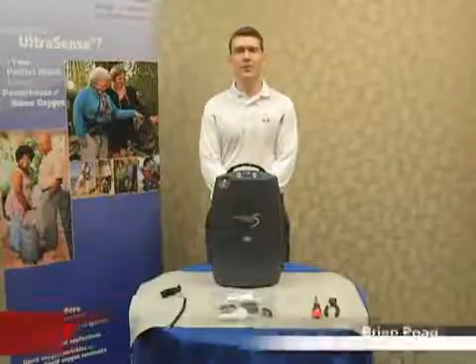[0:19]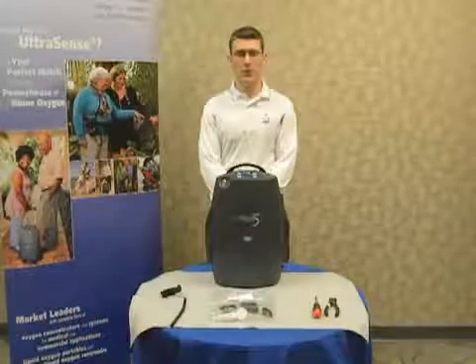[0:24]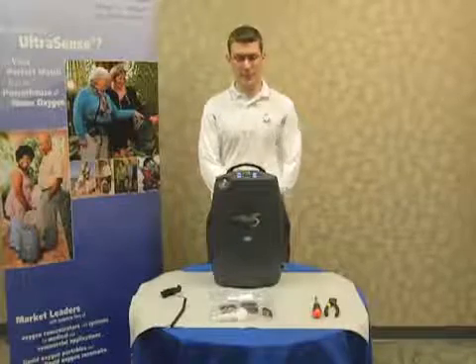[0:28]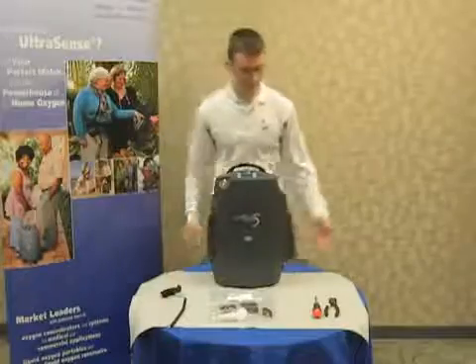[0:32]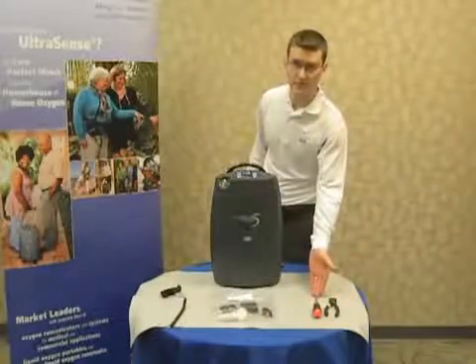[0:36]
We manufacture SeQual and AirSet products, and today we'll be covering the preventative maintenance on the Eclipse 5. Tools required are an ESD mat, wire cutting pliers, and a #1 Phillips head screwdriver.
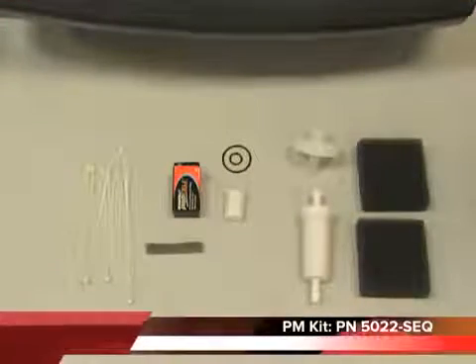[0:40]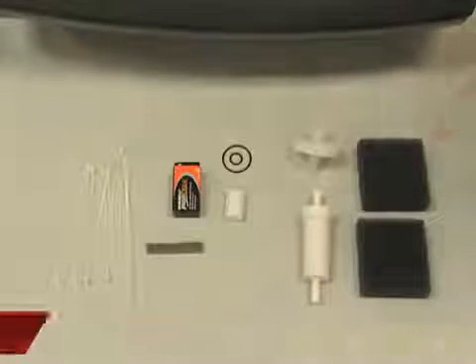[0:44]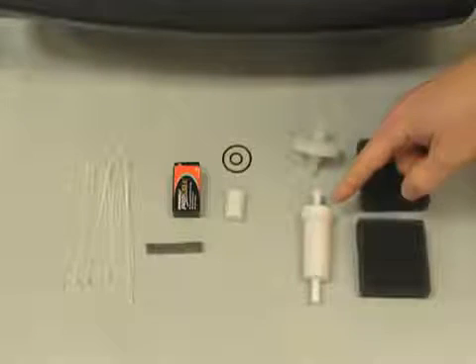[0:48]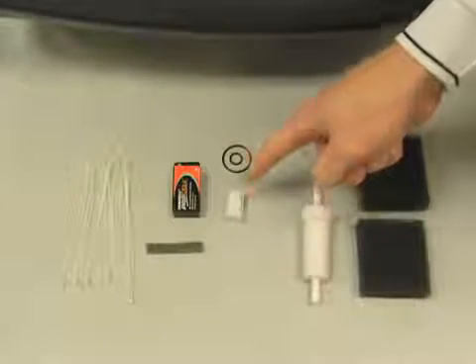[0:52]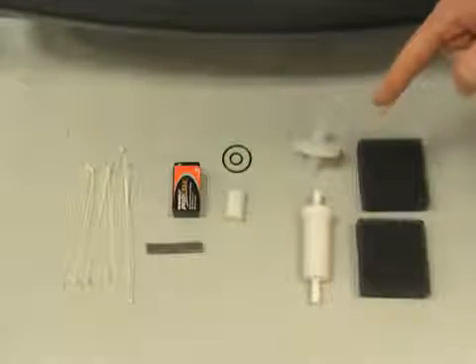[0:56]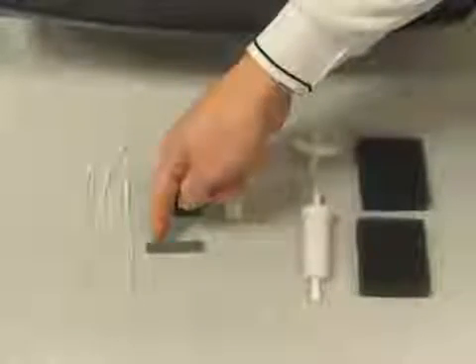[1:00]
The preventative maintenance kit, part number 5022-SeQ, includes your air intake filter, compressor air intake filter, old style HEPA filter, new style HEPA filter, 2 O-rings for the new style HEPA filter, 9-volt battery, 9-volt battery foam, and zip ties.
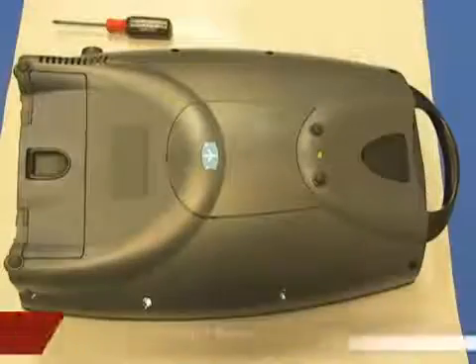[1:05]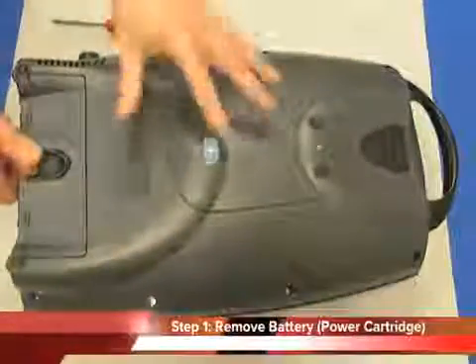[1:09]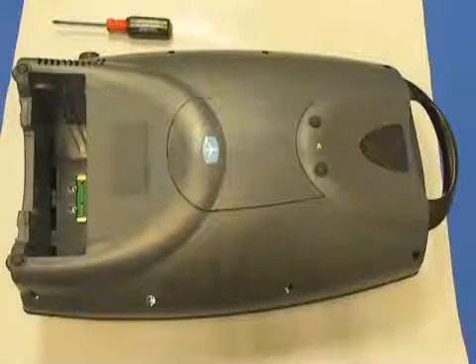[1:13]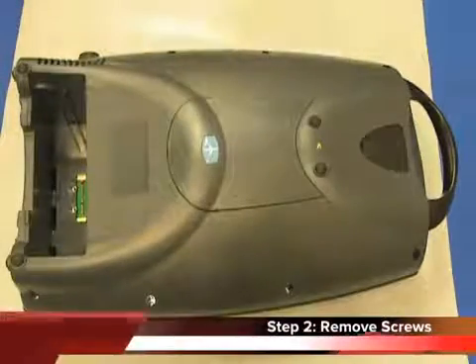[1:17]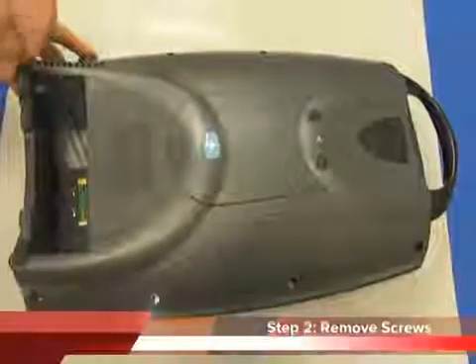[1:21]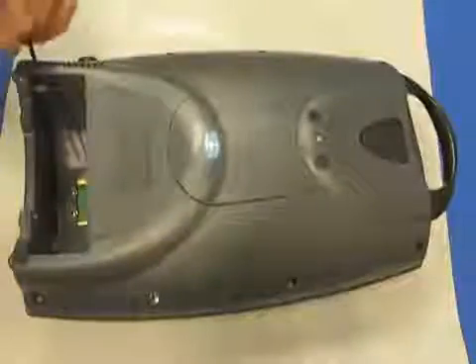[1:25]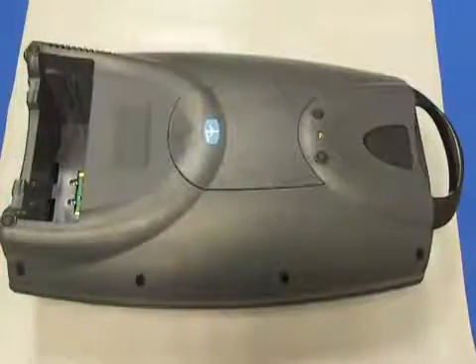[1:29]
To begin with, you'll want to remove the power cartridge from the Eclipse unit. Once the power cartridge is removed, you'll want to use your #1 Phillips head screwdriver and remove the 10 screws. Once the screws are removed, you'll want to remove the front panel.
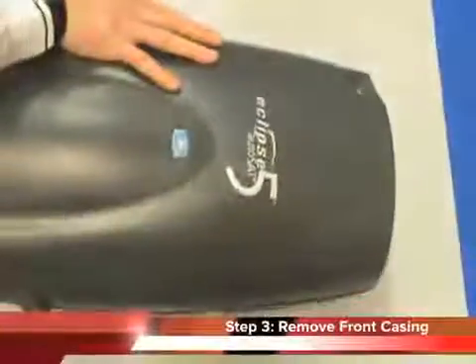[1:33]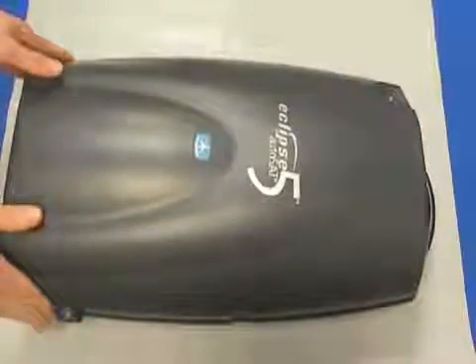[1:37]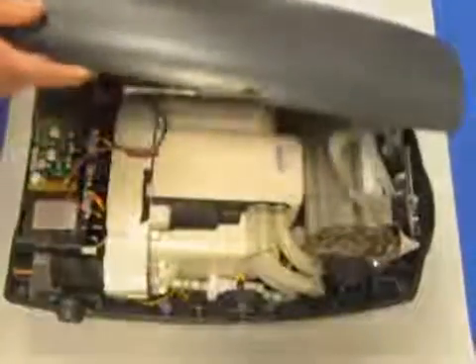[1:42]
Turn the unit over and place the unit horizontally on the back cover. When removing the front cover, pop the bottom end off first and rotate it towards the handle. Be careful not to tear the control panel ribbon cable that is attached to the front cover.
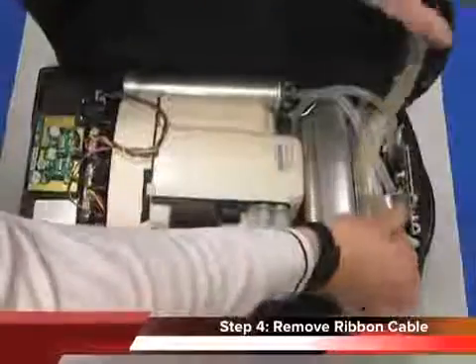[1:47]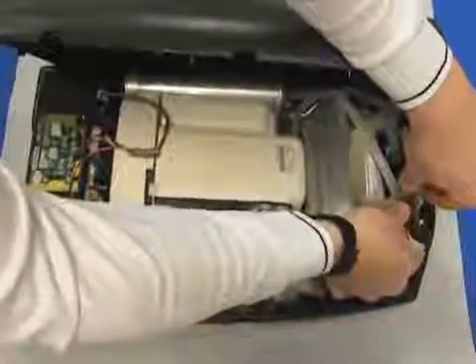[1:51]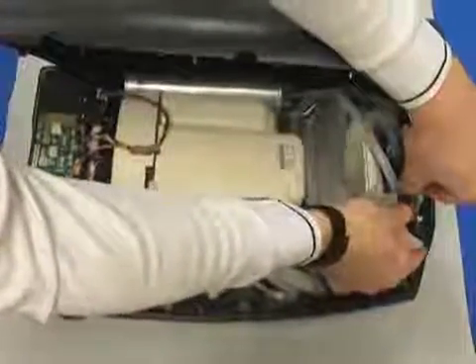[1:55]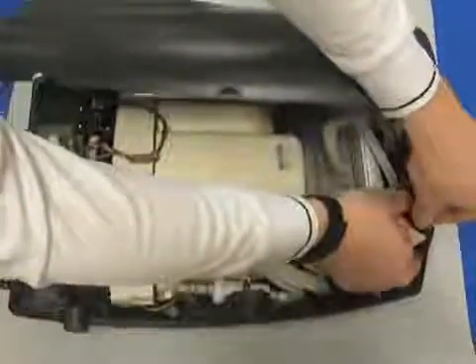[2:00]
You'll want to grasp the circuit board firmly between your forefingers and thumb. Grasp the head of the membrane panel overlay cable in your other hand. Firmly pull the cable away from the board. Pull the cable straight out.
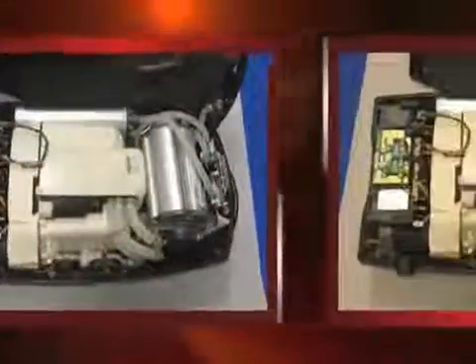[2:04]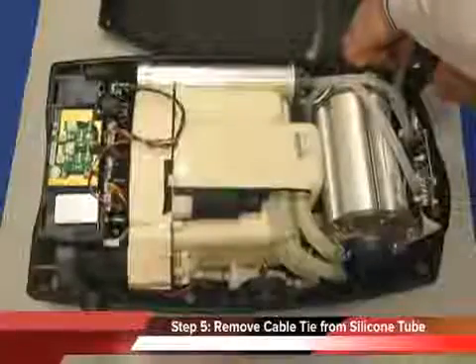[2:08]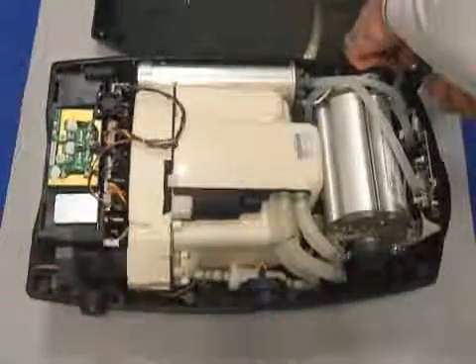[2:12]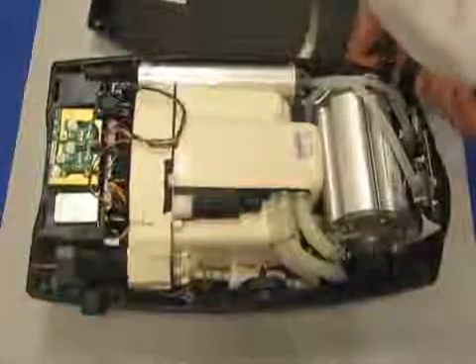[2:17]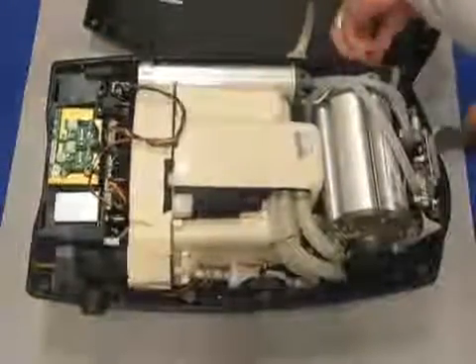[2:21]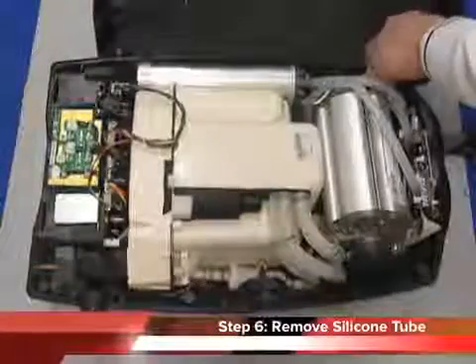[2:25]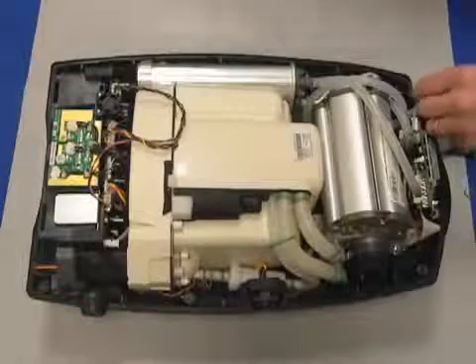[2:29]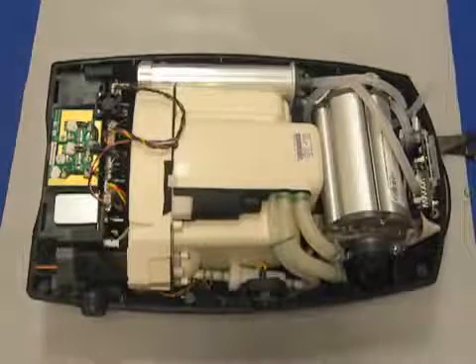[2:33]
The next step is to remove the cable tie connecting the silicone tube to the cannula fitting. First, cut the cable tie at the head of the cable tie with your wire cutting pliers to keep from damaging the tubing. Once you've removed the cable tie, you're ready to remove the silicone tube from the front case. You can do this by pulling directly on the silicone tube away from the front case to detach the silicone tube from the cannula fitting.
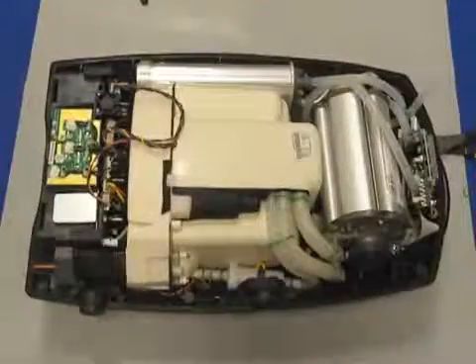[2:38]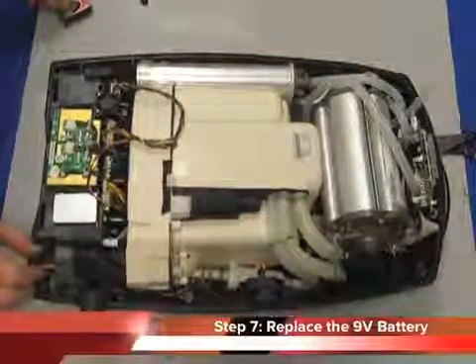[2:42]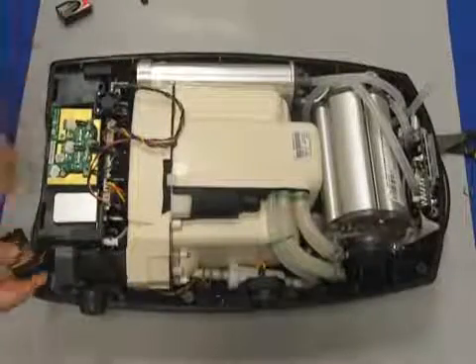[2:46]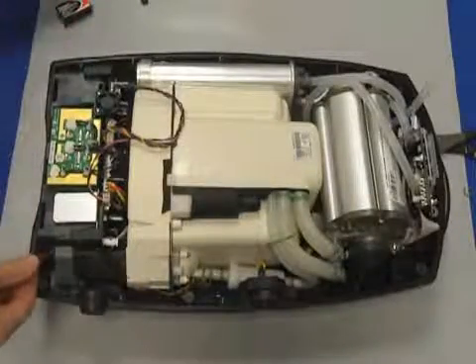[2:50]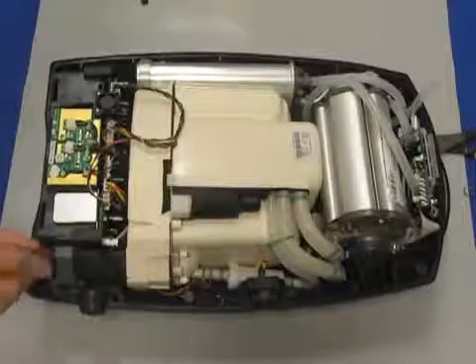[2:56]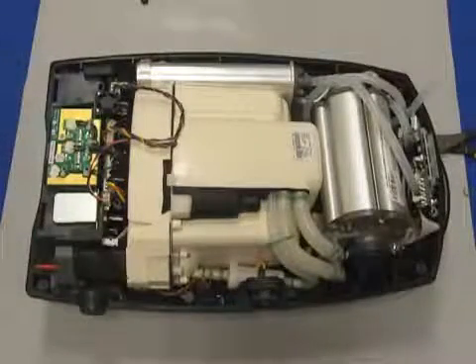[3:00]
The next step is to replace the 9-volt battery. You'll want to lift the battery out of the compartment located at the bottom right corner of the unit. Disconnect the 9-volt battery harness. With your new battery, reconnect the battery harness to the new 9-volt battery. Ensure that the terminals are aligned correctly. Then place the battery back into the compartment. Install new battery foam if necessary.
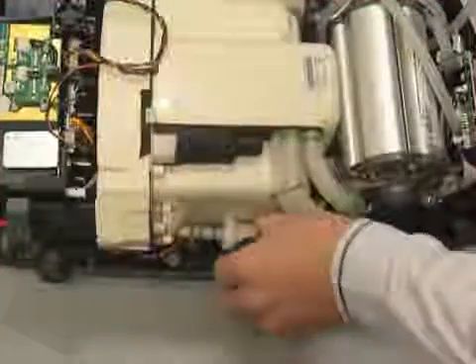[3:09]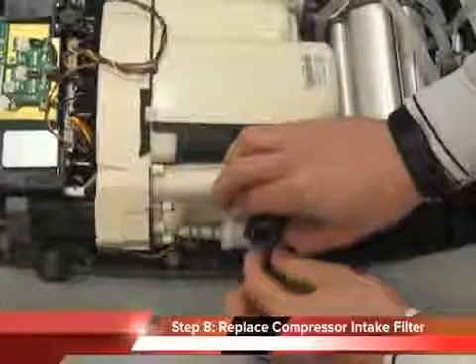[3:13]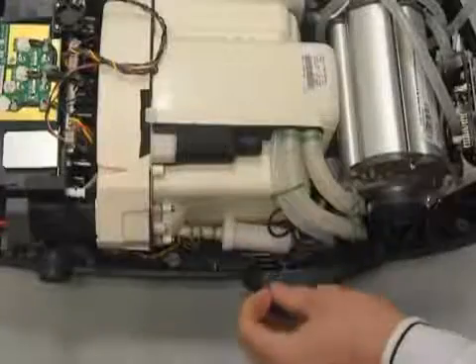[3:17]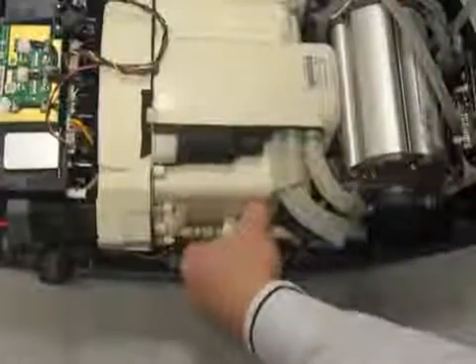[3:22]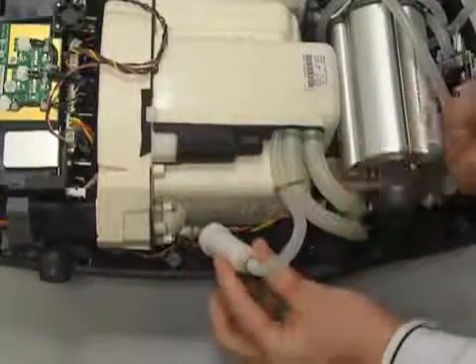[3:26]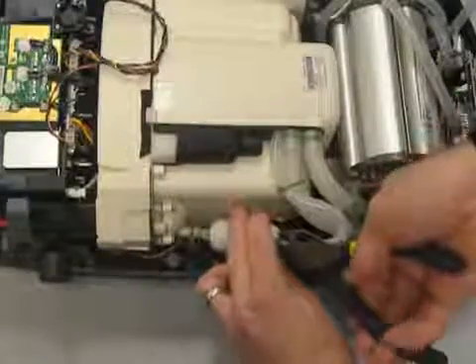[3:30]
The next step is to replace the compressor intake filter. You may want to move the power connector out of the way for ease of access to the compressor intake filter. You'll want to pull the compressor intake filter out from the unit and cut the heads of the cable ties located at the top and bottom of the filter as shown here.
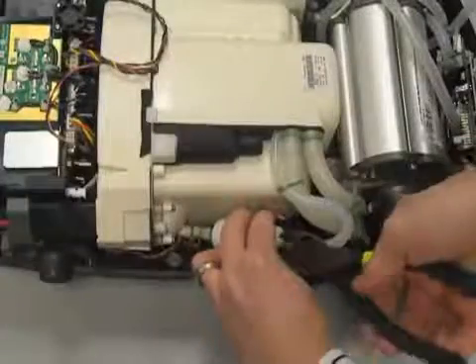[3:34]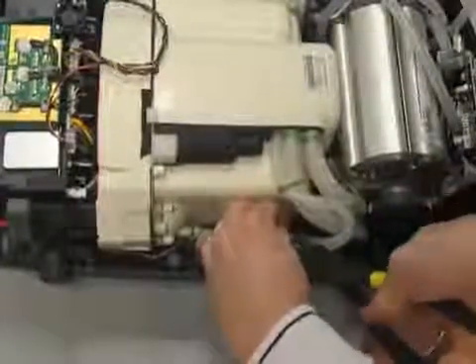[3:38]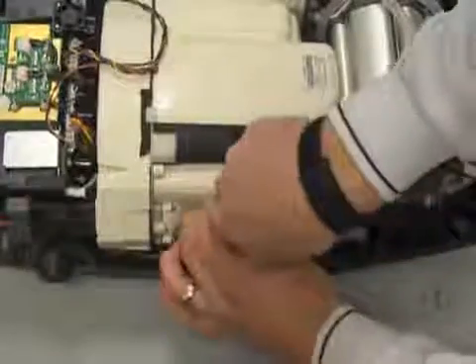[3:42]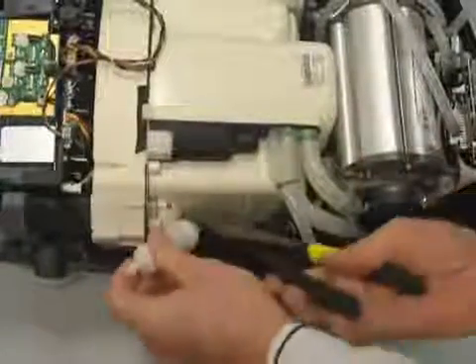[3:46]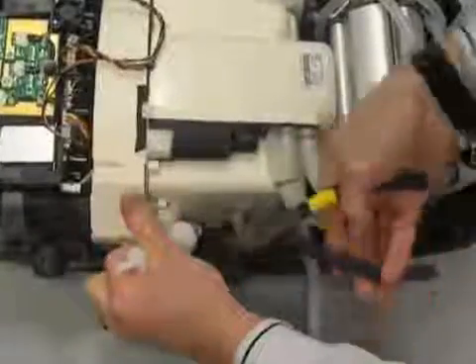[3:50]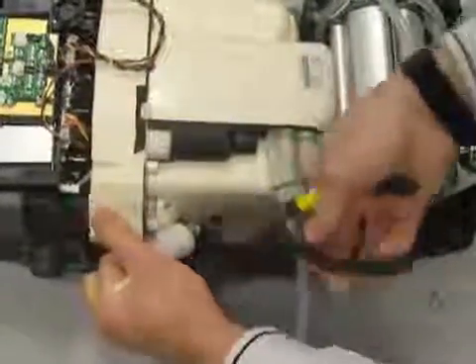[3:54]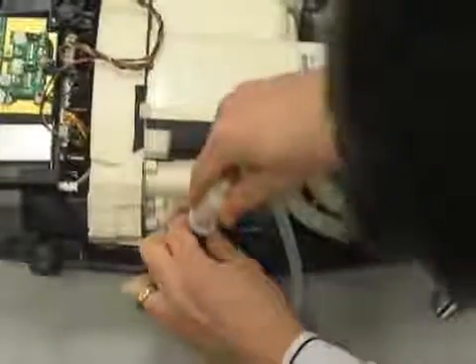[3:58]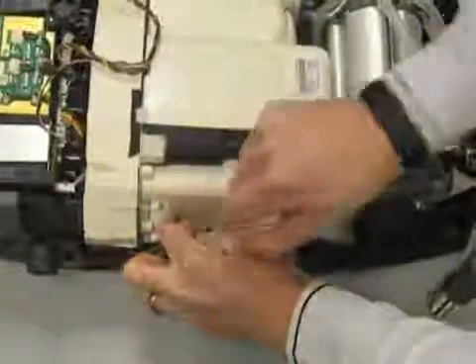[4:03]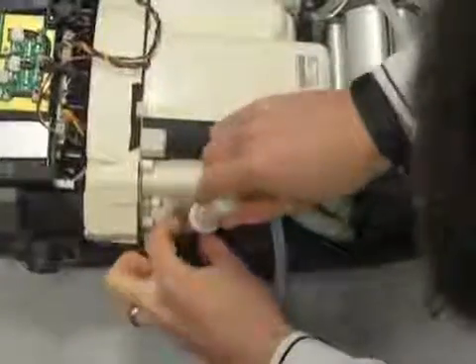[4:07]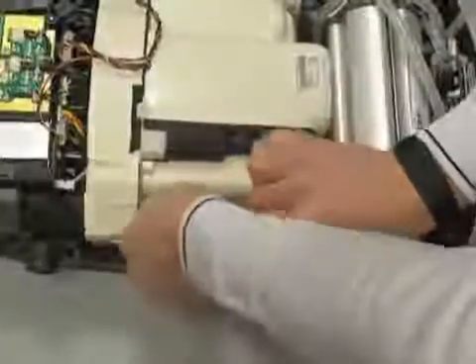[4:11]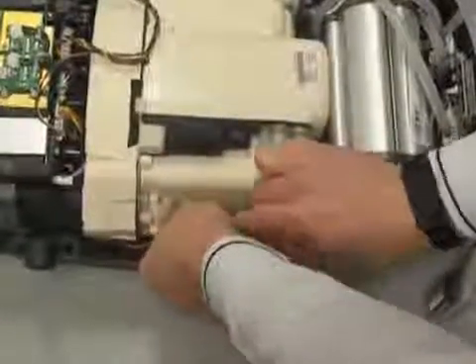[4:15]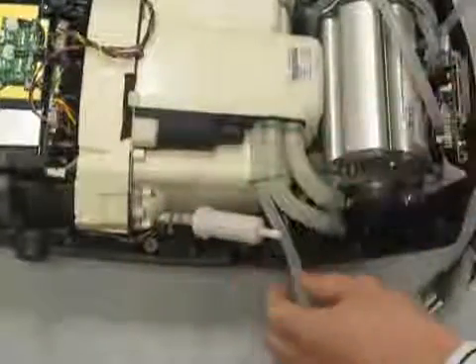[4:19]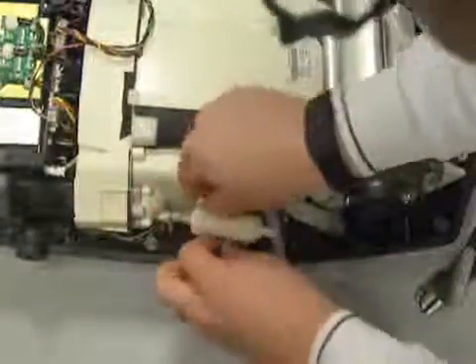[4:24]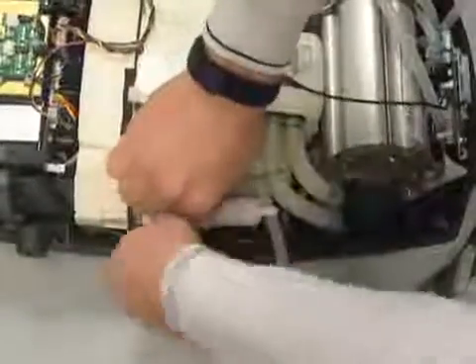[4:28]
Remove the old filter and replace with the new compressor intake filter. Install new cable ties on both the top and bottom barbed connections on the compressor intake filter.
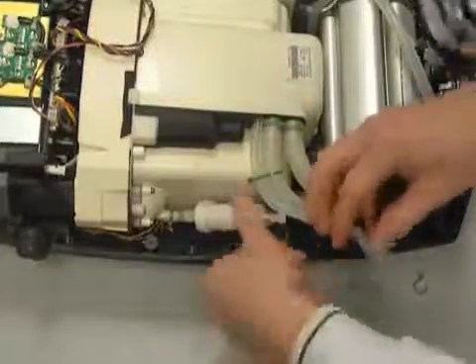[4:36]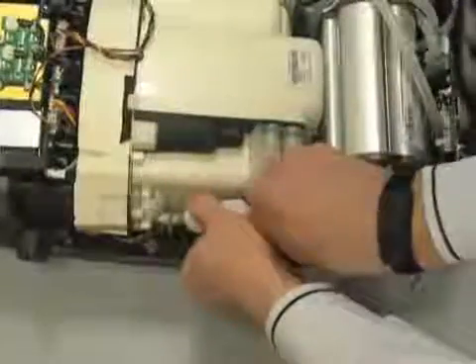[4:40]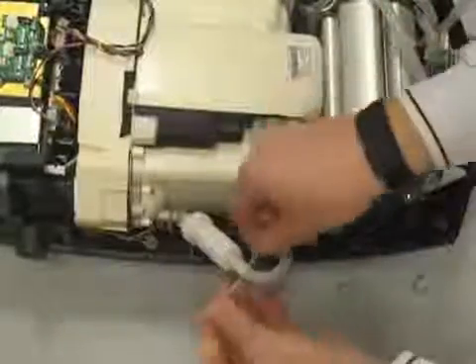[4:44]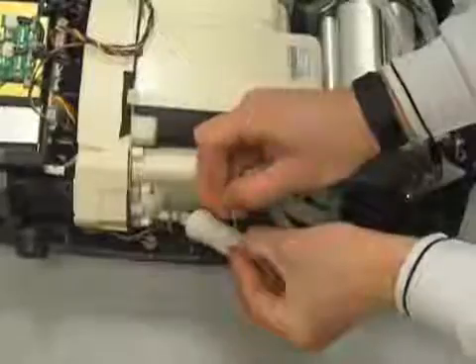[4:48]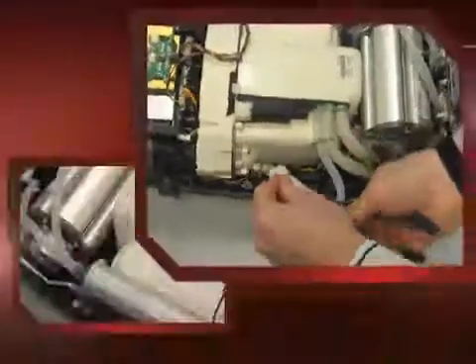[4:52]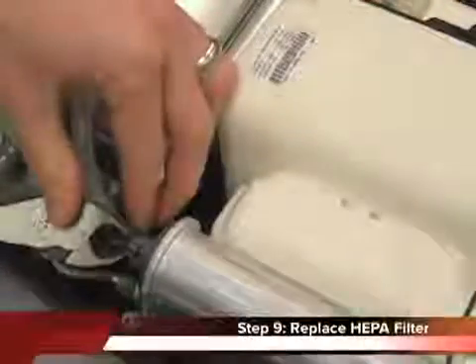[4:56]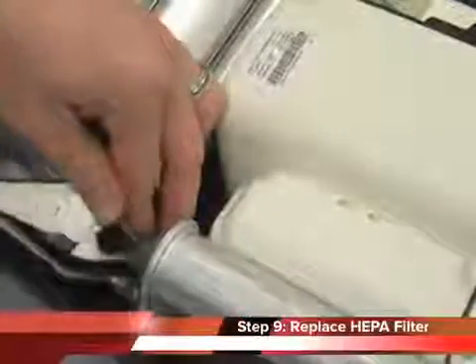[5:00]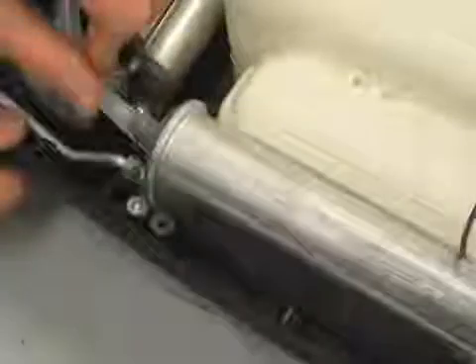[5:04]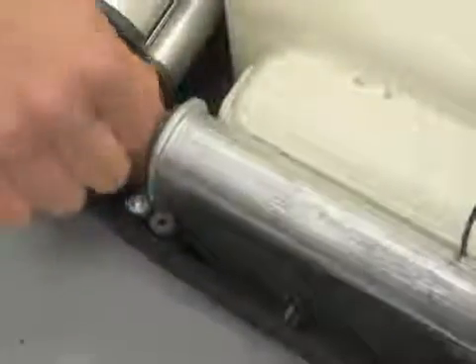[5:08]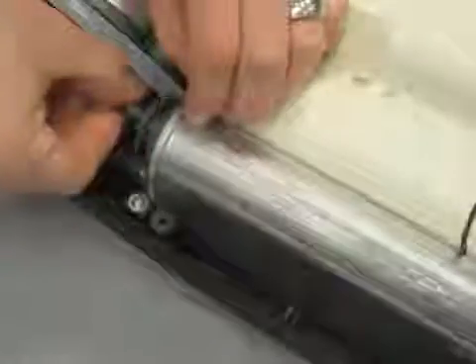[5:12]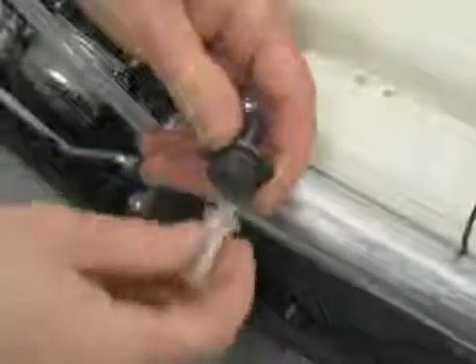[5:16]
The next step is to install the new HEPA filter. You will want to begin by cutting the head off of the cable tie at the tubing connection located at the top of the product tank. Pull the tubing off the barb fitting. Next, unscrew the wing nut. Unscrew the HEPA filter from the wing nut.
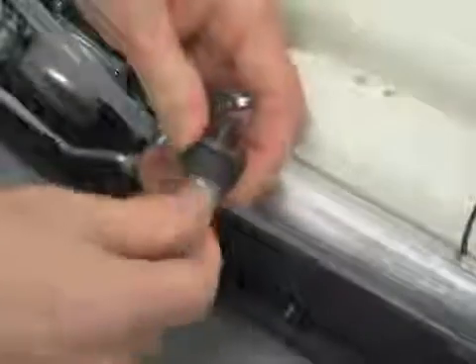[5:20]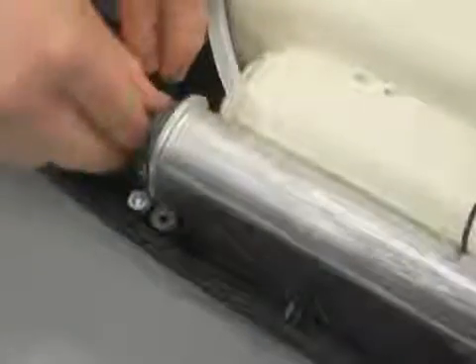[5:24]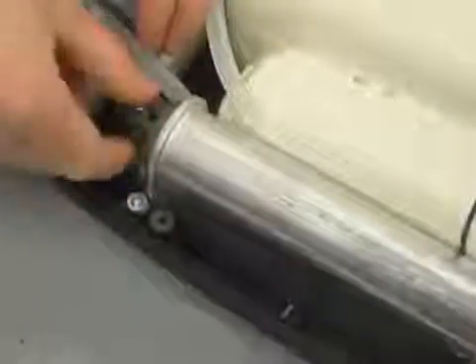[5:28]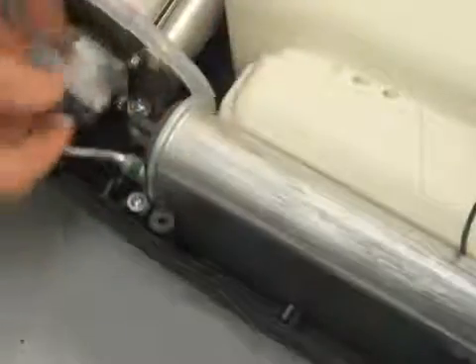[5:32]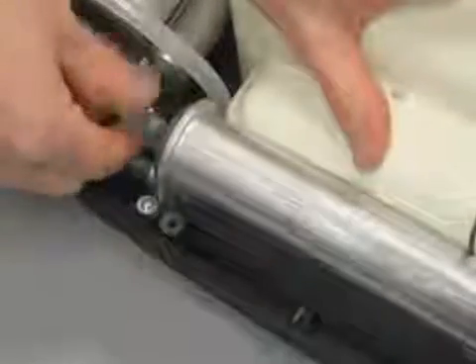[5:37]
And with your new HEPA filter, screw the new HEPA filter into the wing nut connection. Next, screw the wing nut assembly back into the product tank. And finally, push the tubing back onto the barbed fitting and secure with a new cable tie.
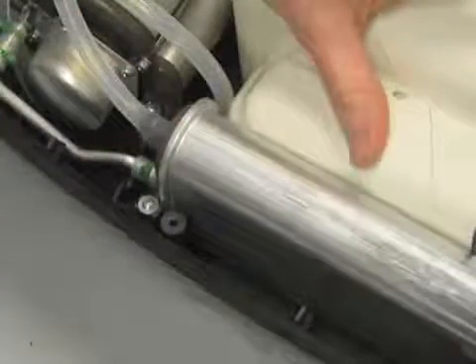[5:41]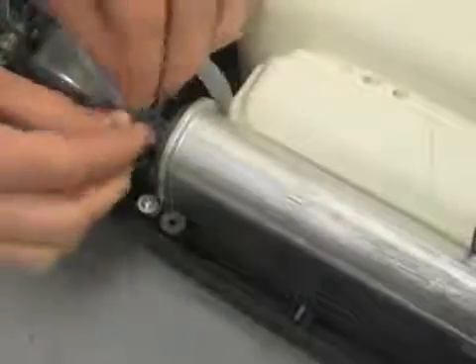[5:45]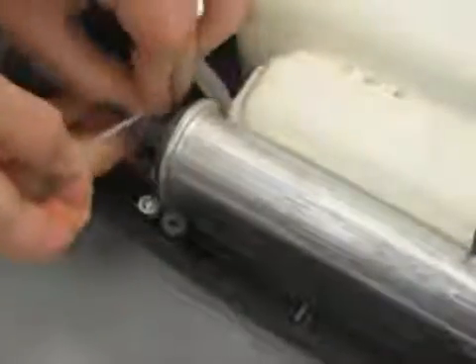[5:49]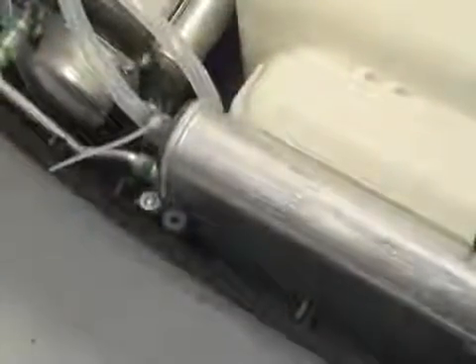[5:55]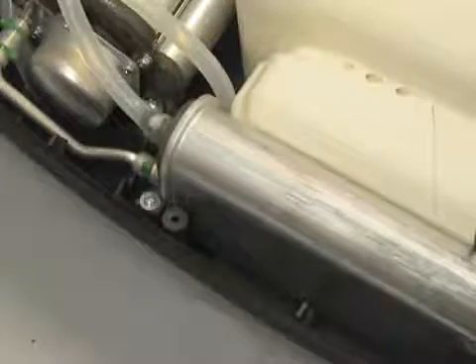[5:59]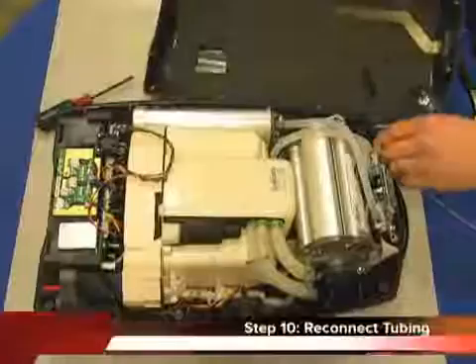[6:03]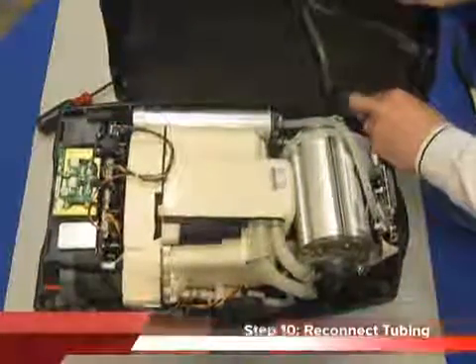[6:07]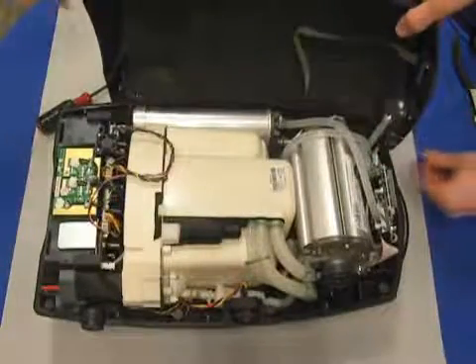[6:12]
The next step is to reconnect the silicone tubing to the cannula fitting. You'll want to push it on the cannula fitting and secure with a new cable tie.
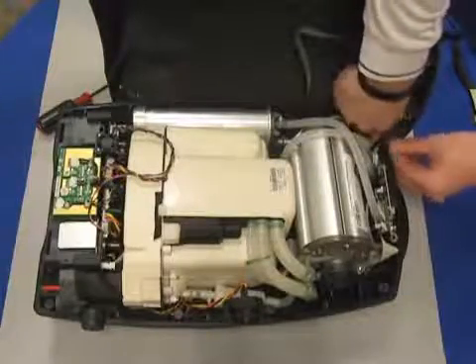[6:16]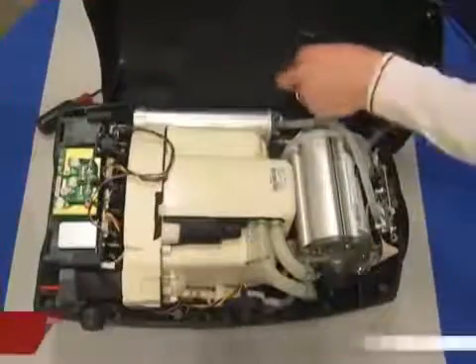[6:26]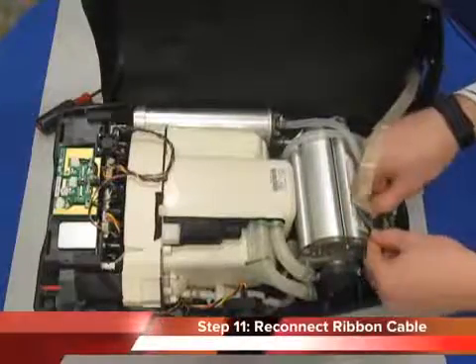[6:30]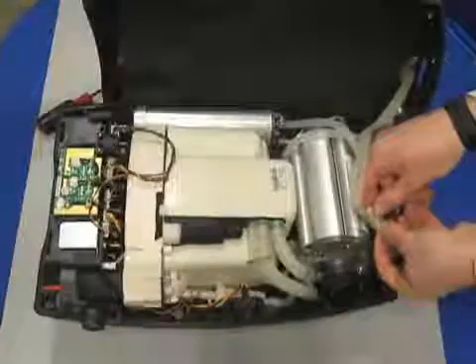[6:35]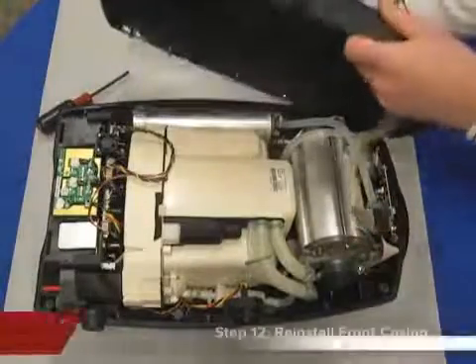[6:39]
The next step is to reconnect the ribbon cable to the circuit board. You'll want to push it on the circuit board pin connectors carefully and push until it's seated all the way down. Place the front case back onto the Eclipse unit.
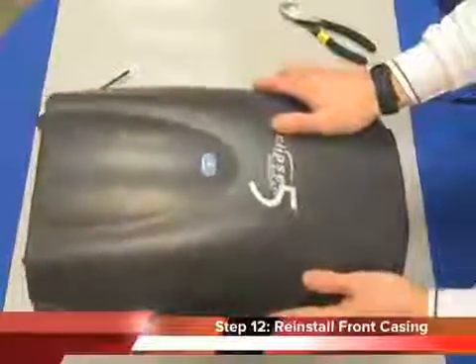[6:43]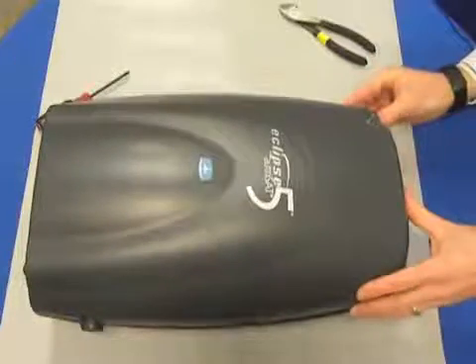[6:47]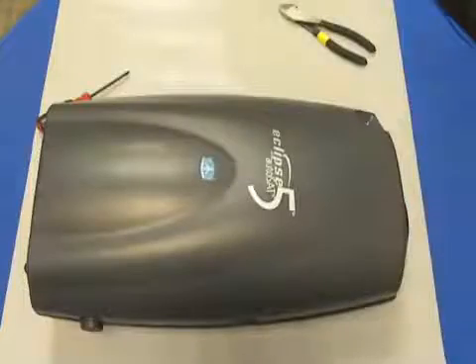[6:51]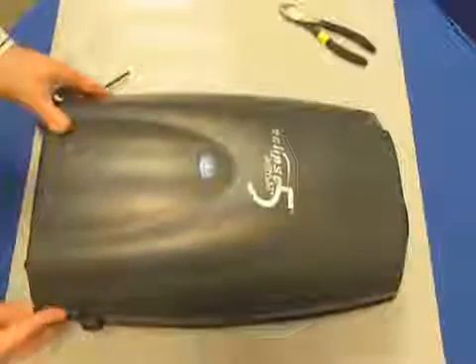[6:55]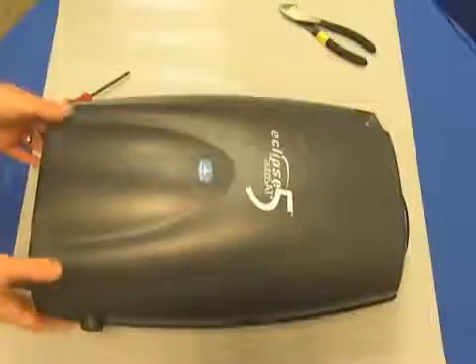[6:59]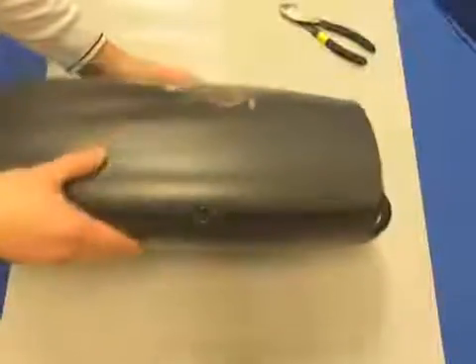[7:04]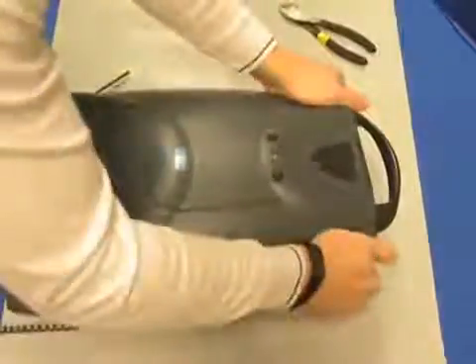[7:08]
It's important to ensure the rubber gasket is properly seated and uniform around the perimeter of the unit. Also, verify the power connector is aligned properly. Next, while holding both front and back cases in place, rotate the unit so it's resting on its front side.
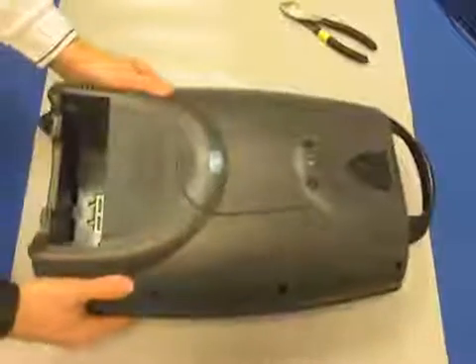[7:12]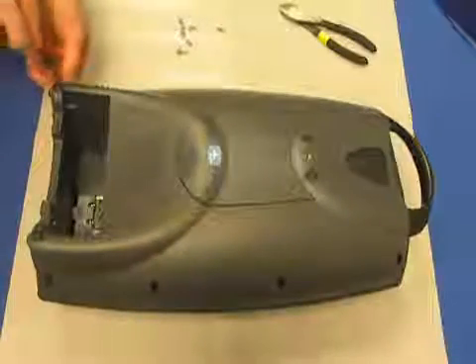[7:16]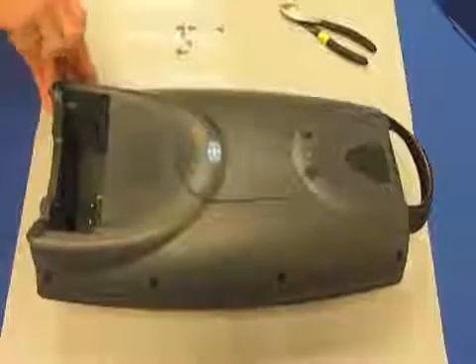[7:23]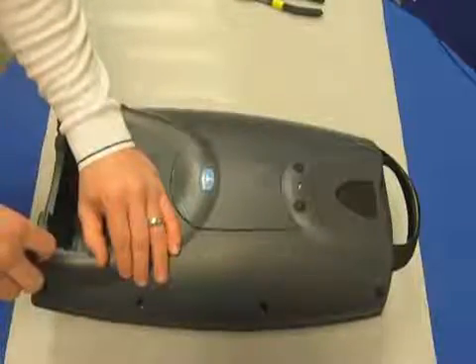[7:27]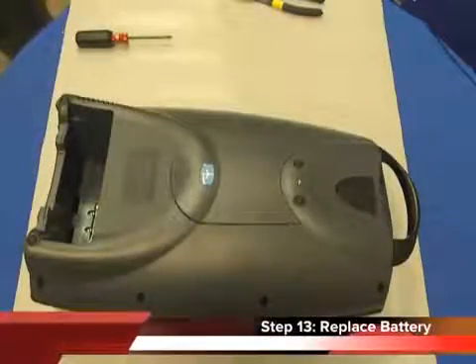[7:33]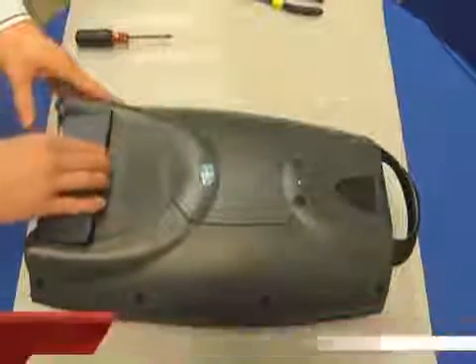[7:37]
Using your number 1 Phillips head screwdriver, reinstall the 10 screws. Finally, replace the power cartridge and your Eclipse unit is ready for use.
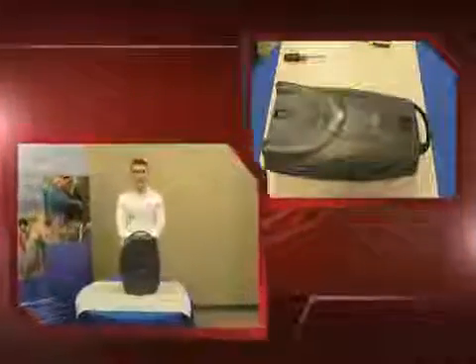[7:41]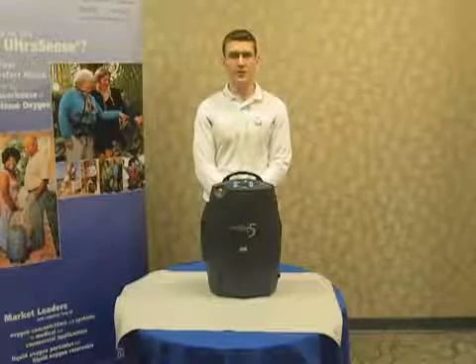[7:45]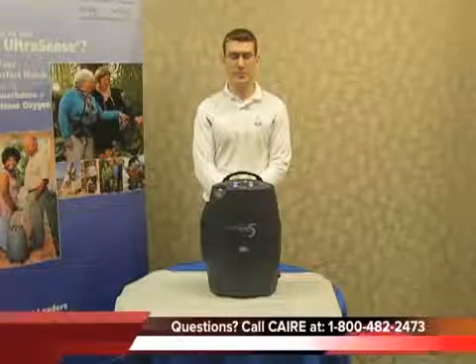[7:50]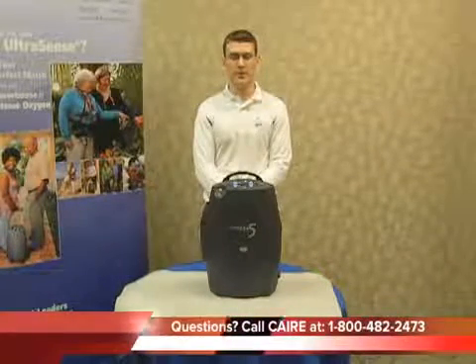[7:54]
So this concludes our demonstration on how to perform the preventative maintenance on the Eclipse 5 unit. This needs to be done on a yearly basis at minimum. If you have any questions, please contact technical support at the number located at the bottom of your screen.